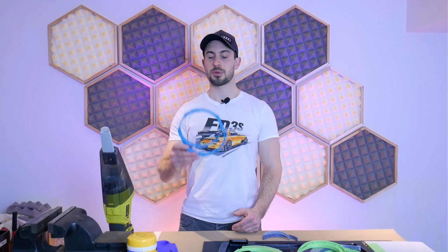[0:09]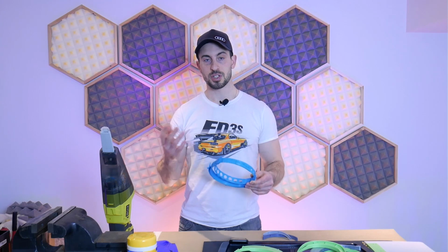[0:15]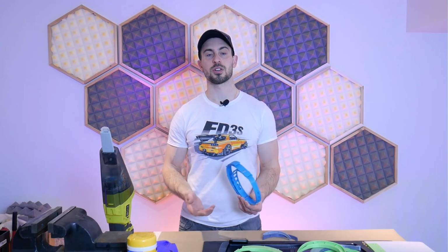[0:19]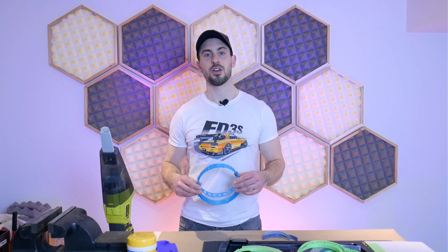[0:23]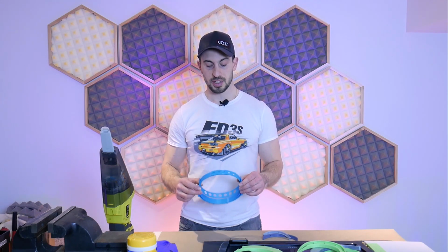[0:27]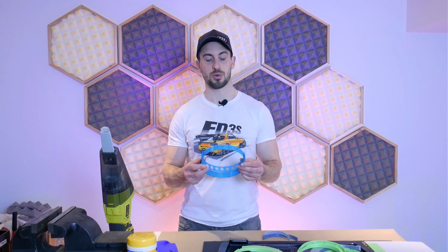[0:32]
Hey guys, so this is just a follow-up video to my last video where I shared with you guys my 3D printed face shield design, and it had integrating folding head straps. And I actually reached out to a number of companies since then that have been printing PPE for frontline workers like nurses and doctors. And one company thought that this would be a great candidate for the COVID isolation unit at Vancouver General Hospital. Now, it's my understanding that they trialed it there and it received positive feedback from some of the nurses and or doctors.
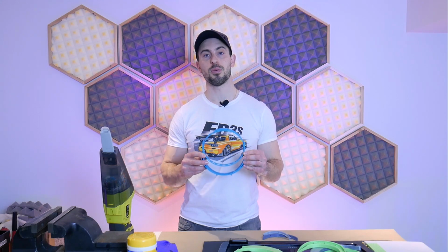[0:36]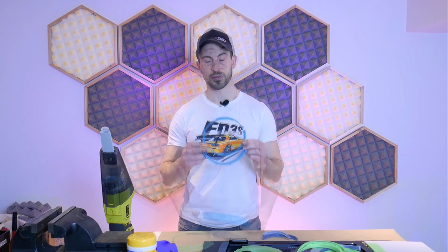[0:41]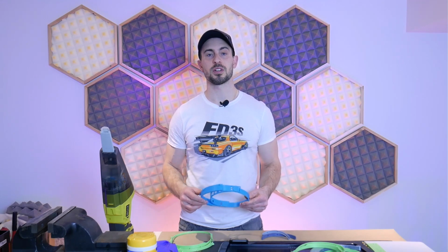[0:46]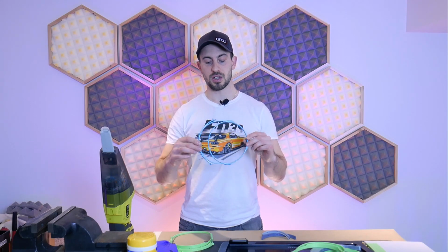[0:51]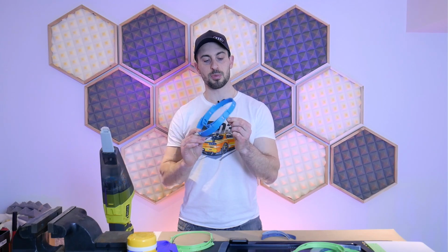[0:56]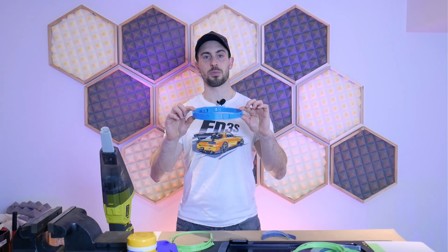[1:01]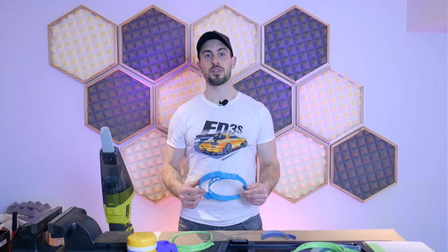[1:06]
And that's because it was an all plastic design and it didn't require any foam or any of the fabric that houses the typical elastics that you see on a lot of these prints. Also, since then, I've been printing my own design to donate, but I'm very limited with a single printer, and this thing does take a considerable amount of time to print. And that's because it was based off of the original Prusa RC2 design, and in order to accommodate the folding head strap with that little detent mechanism, I had to increase the height of the model, which contributes to more print time. So since then, I've been redesigning this mask, and I came up with something that I think works really well, and it achieves three major things.
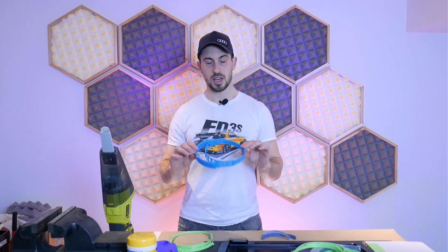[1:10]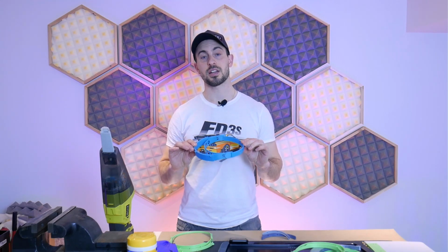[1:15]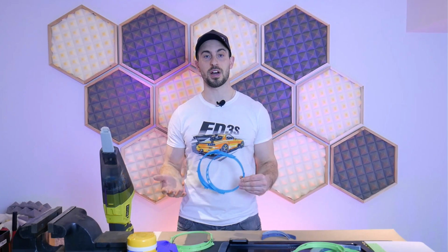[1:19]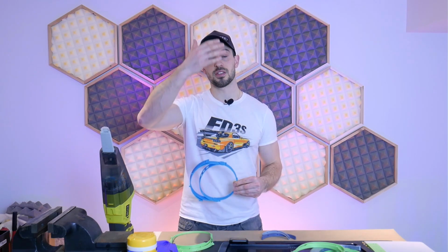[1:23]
So the first one is it continues not to use any sort of elastic or foam in the design. The second thing is that it, of course, decreases the print time dramatically, so I can print more of them and faster. It's much more efficient. Then the third thing is that it allows you to adjust the angle of the front face shield.
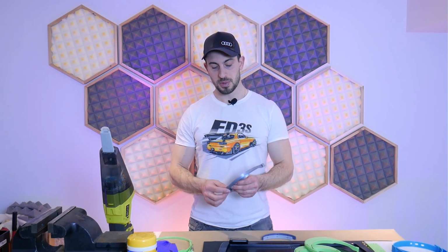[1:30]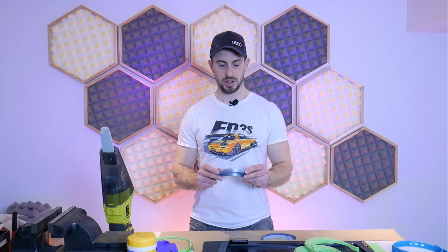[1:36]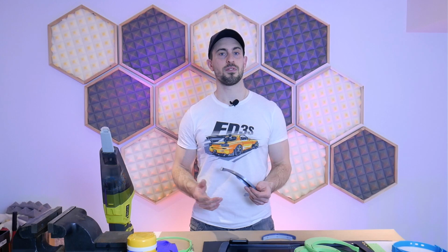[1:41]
So I went about experimenting with different models that I found online. Some of them had very clever friction fits for the face shield, like this one here. And it worked great in theory, but in practice, they were very unreliable and it was very difficult to get the actual shield in there. Other ones had very simple frames with very fast print times. But then once you got the actual shield on there, the frame distorted the shield into a sort of weird shape and even distorted your vision a little bit. And so I tried to take the best features from all of these different masks and I tried to work them into one model to sort of optimize the design.
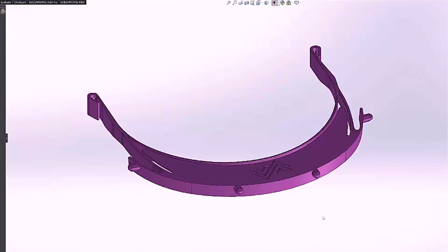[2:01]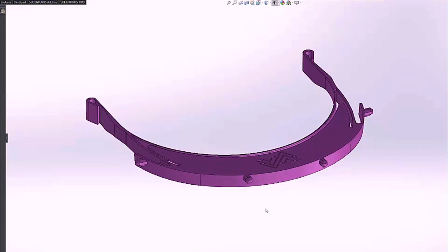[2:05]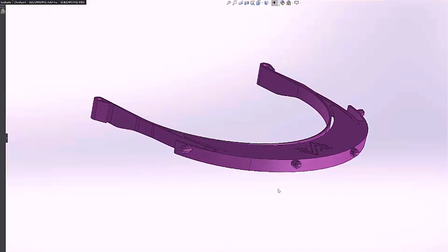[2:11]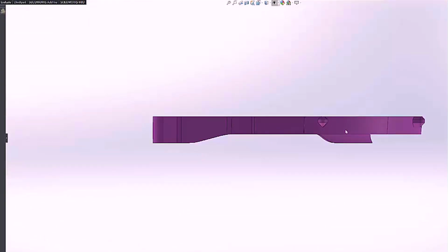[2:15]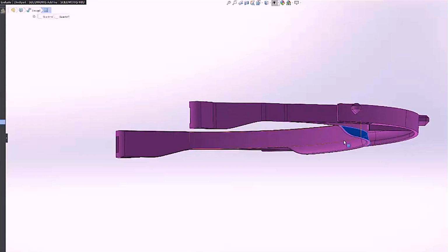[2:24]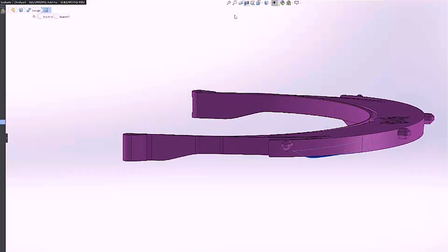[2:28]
So now we're looking at the CAD model, and the first thing you're gonna notice on the front are the little mounting nubs for the plastic face shield. And those are the same as the Prusa RC2, so it's compatible with that design as well as my previous design. From the side, you'll see that the profile is much slimmer, and so that's gonna contribute to a much decreased print time. And now I'm going to point out here this little sloping, angled, swept feature if you want to call it that, and this is where the shield sits on your forehead.
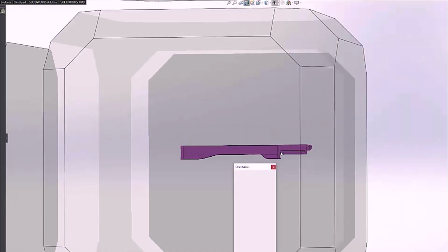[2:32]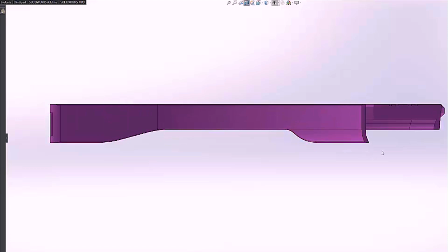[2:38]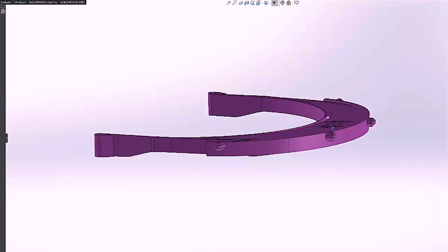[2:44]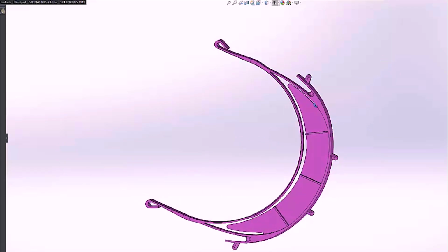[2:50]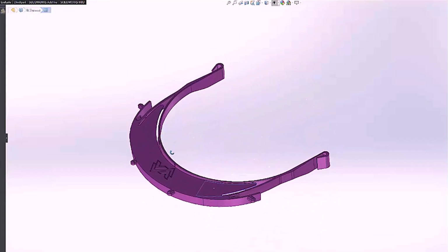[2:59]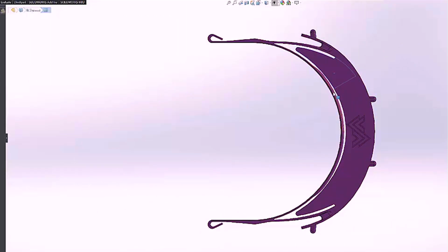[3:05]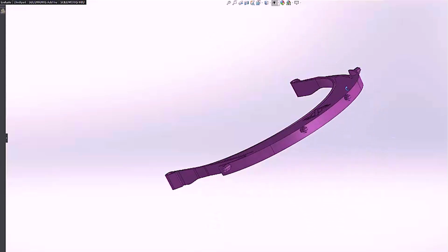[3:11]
And so you can see that this is the position that you would wear it in here, and that feature there contributes to a higher degree of comfort on your actual bare skin because you are not wanting to use any sort of foam in this particular design, because the foam can trap things like bacteria, viruses, and all that sort of thing. On the underside here, you'll see that I'm pointing out the cover for the top of the forehead. And so I think that's an improvement over a few designs out there where this area is all open. And the other thing you're gonna notice is that although there's a cover, there's still a tiny little slit here. And this is key for comfort and for fit, as that's gonna allow the shield to bend and conform to your head a little bit better.
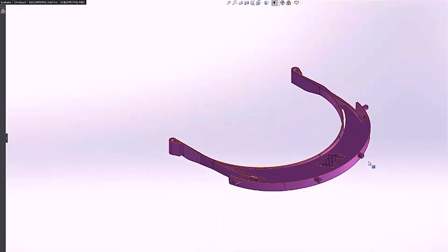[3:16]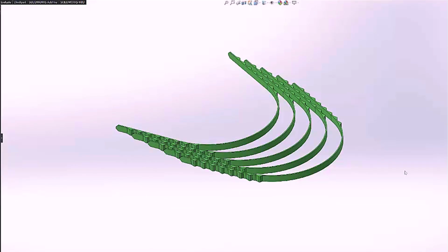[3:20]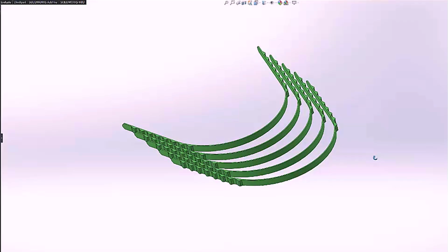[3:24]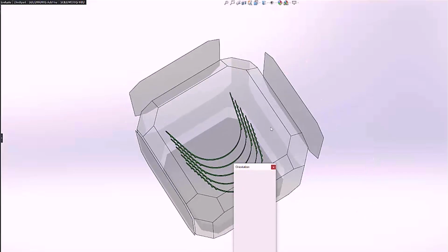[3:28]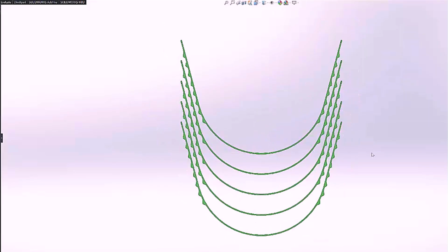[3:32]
Now we're quickly gonna look at the straps that go behind your head, and these are the PLA straps. So you can see that the model is nestable. I have five different straps here to optimize the print space on a printer bed, and they have to be printed in a geometry that's close to what would be in service, because PLA is flexible, but it's not as flexible as, say, TPU, so it has to take on that general shape of being in service. If you flex it too much, it could break.
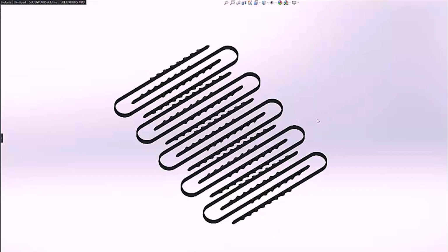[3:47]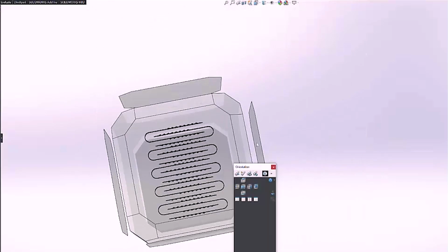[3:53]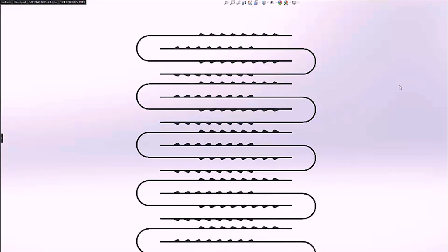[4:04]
Unlike the TPU, which you see here, I can fit twice as many on my print bed because I can really squish the model down into a smaller shape, because it won't matter. Once it comes off the print bed, the TPU is very flexible. It's also still very strong. I can flex it into any position, any sort of shape I want it to conform to, pull on it, and it won't break. So the TPU is ideal, but you can get away with the PLA models.
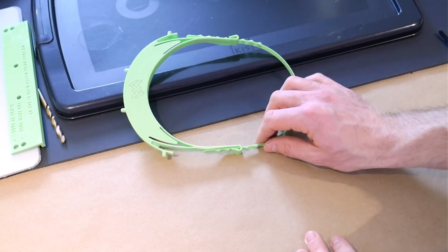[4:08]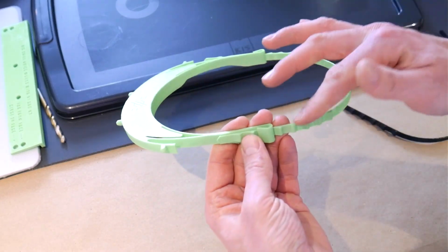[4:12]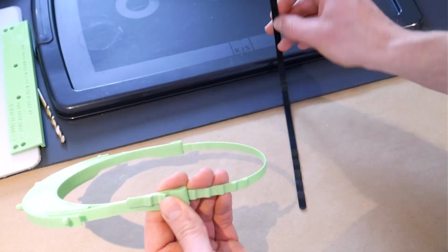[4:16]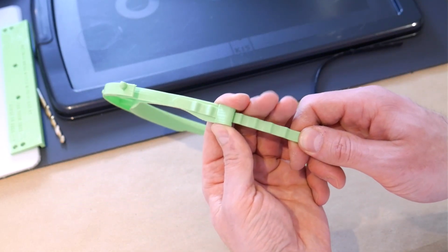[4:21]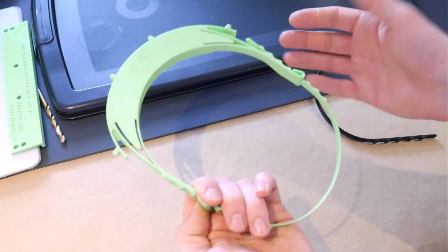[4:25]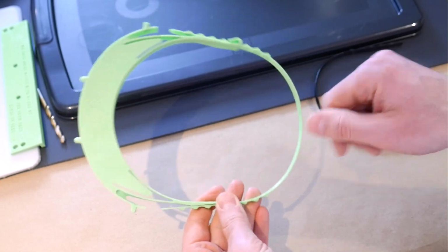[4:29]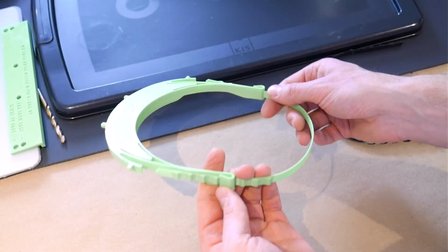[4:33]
And so this is the actual printed model here, and all of the same features from the CAD model are there, but I want to focus on these back straps. These ones here are printed in PLA. I do have a TPU model that I printed here. You can see it's much more flexible. What I want to demonstrate with the PLA model is to show you that it does work in PLA. And so in order to tighten this thing, it works a lot like a zip tie. You can sort of just push it in and it makes this area smaller. There's adjustment on both sides, so you have more adjustability.
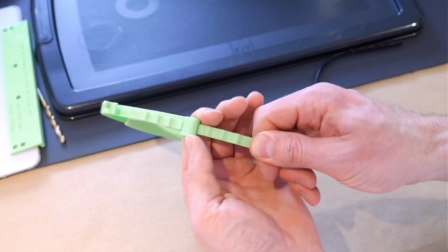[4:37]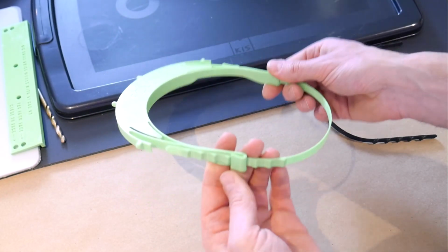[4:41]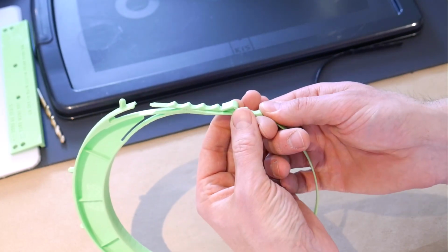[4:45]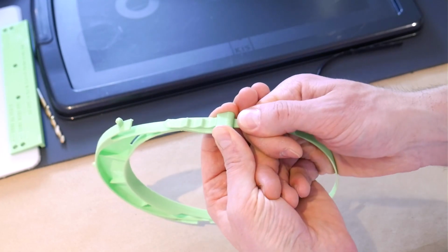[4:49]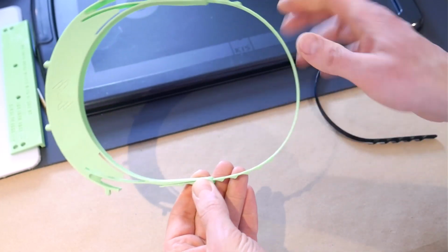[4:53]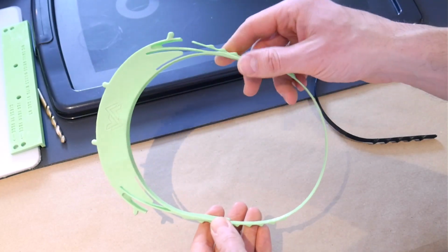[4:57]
Now to make this thing looser, pulling out is more difficult, and that is by design because you don't want this thing to loosen while it's around your head, but it's pretty easy. You can either brute force it if you really, really want, or you can take your thumb and forefinger and squeeze around this loop and then just pull it. And that sort of loosens it up just enough to get these notches to pull out, and then you have a larger area here for a larger head.
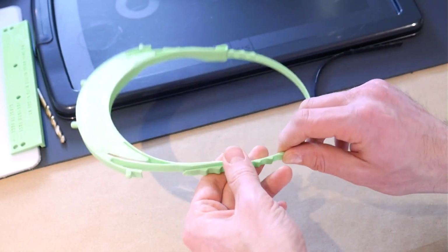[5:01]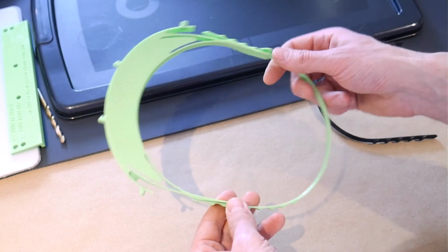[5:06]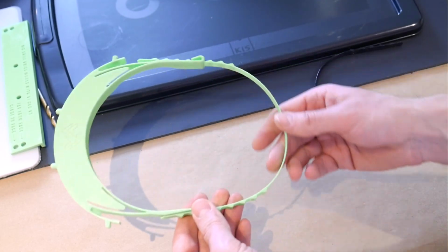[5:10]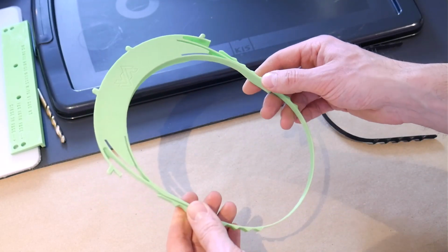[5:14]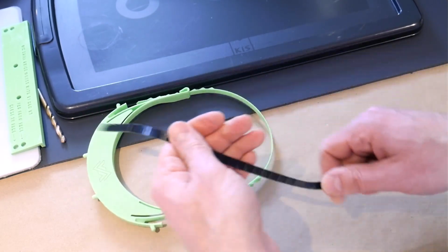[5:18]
Now, the PLA will eventually fail if you continually adjust this thing over and over again. If you leave it at one setting, it will likely last indefinitely, but I would say if you adjust it over and over and over, you're probably going to get maybe 20 or 30 uses out of it before the PLA fatigues. TPU, on the other hand, is what I would definitely recommend.
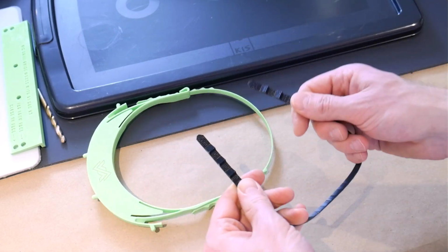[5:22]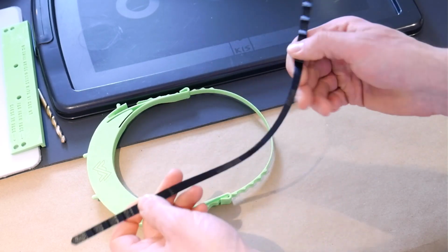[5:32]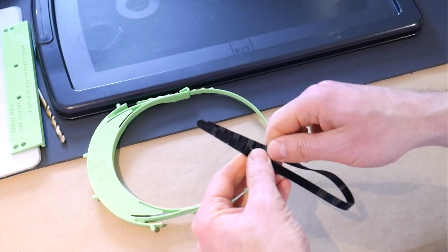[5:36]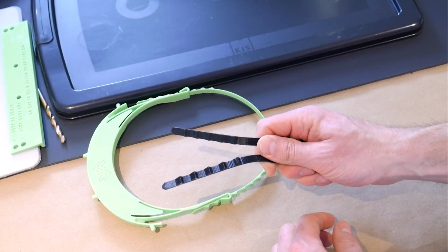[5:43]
This is the first time I'm printing with TPU, and don't be scared of it. It's actually really easy to print with. I can share my print settings if you ask me for them in the comment section down below. But this stuff is so resilient, so durable. You can pull and pull and pull and flex it, and it will not break and it will not fail. It's so good and so easy to use. Definitely try this out if you haven't already.
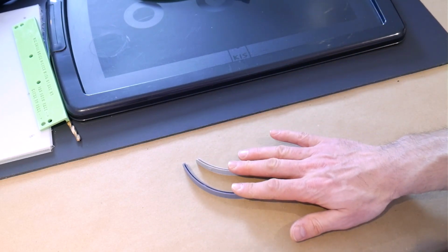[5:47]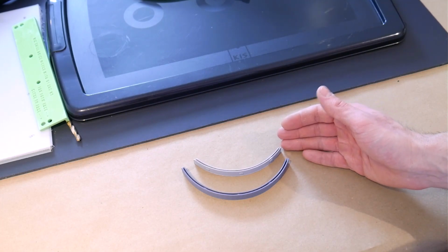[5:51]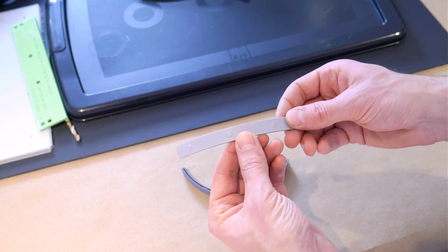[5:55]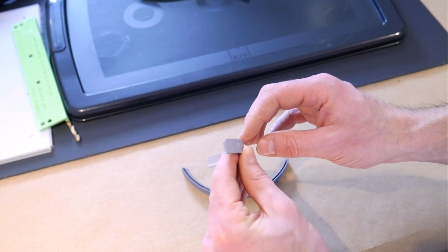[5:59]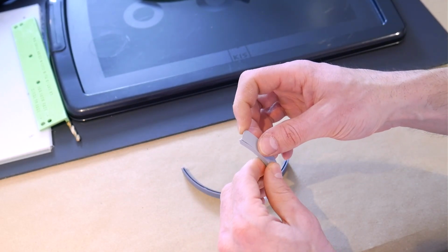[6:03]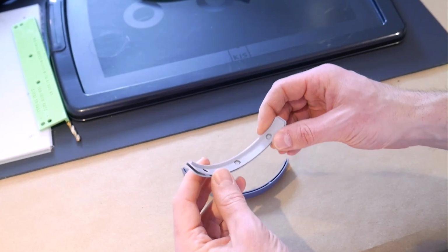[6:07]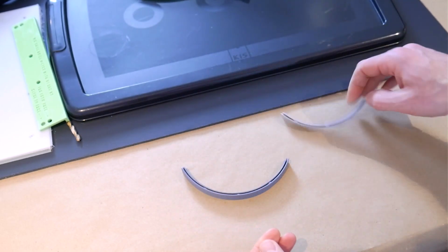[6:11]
In addition to redesigning the entire mask, I also redesigned the little lower face shield part that fits on the bottom of the clear sheet of plastic, in order to give it a little bit more shape at the bottom. This is an original Prusa RC2 one, and you can see that they made the walls really, really thin, and it's very flimsy. After a couple of times of installing and removing those shields, they tend to separate. Now, this of course is not great because then it renders this thing useless and the shield will pop out.
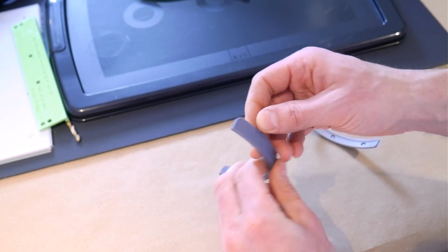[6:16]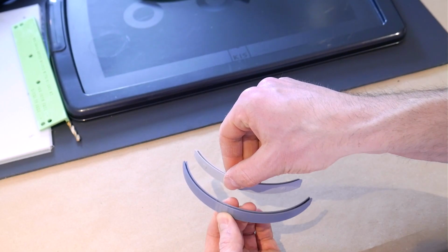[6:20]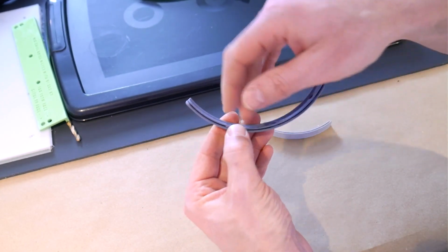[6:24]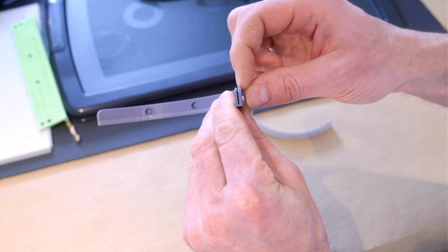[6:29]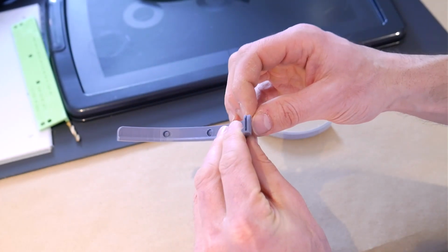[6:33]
I made mine a little bit beefier here, and I decided to also increase the swept area so it gives the shield a little bit more shape than this smaller Prusa RC2 one. This guy here also has a lead-in, which might be a little bit difficult to see on the camera, but it makes it easier to actually slip the shields in there. The spacing is a little different as well.
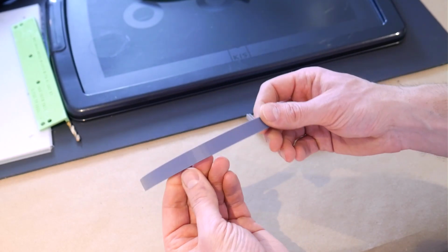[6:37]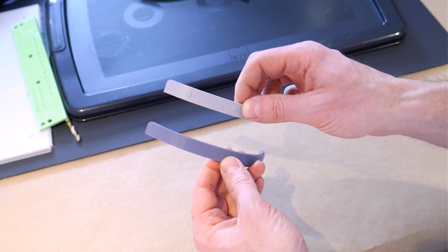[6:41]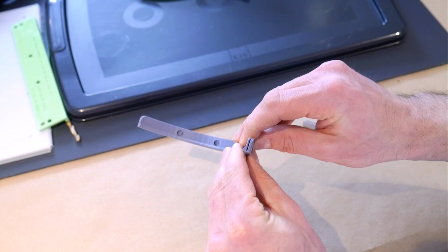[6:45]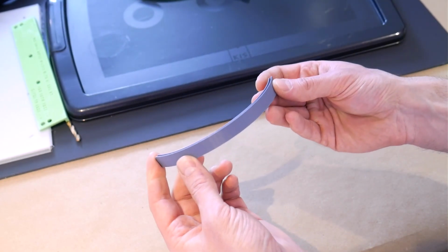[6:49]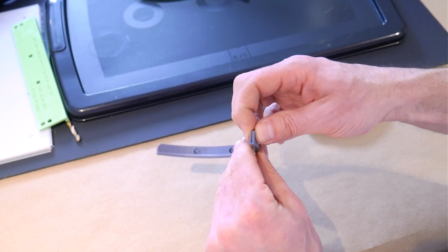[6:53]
I'm using 0.5 millimeter PETG sheets. I don't remember, at least off the top of my head, what the Prusa design was using. But for these 0.5 millimeter sheets, this works excellent. It's easy to get the sheet in, it's easy to get it out, but it still provides enough friction that it holds the shield in place, and the added thickness doesn't cause those layers to separate.
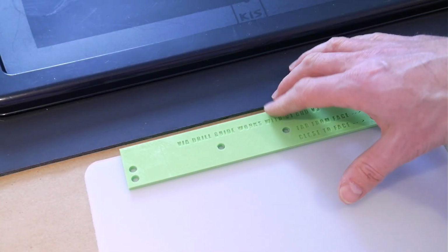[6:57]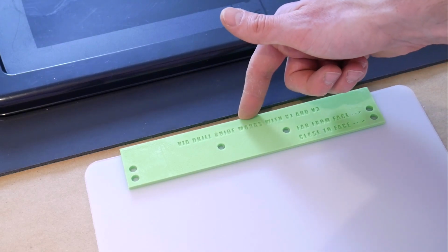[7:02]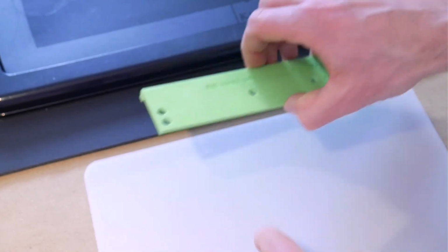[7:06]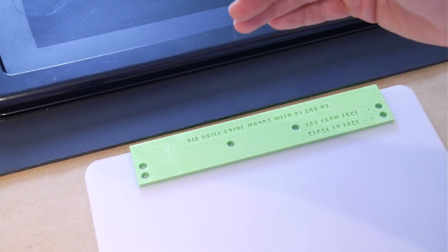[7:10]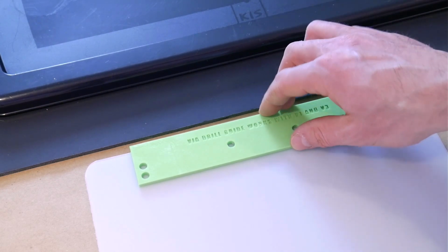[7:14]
One of the other things I designed for you guys to make this whole process a little bit easier is a drilling guide for the holes in the plastic face shields. You can see here, it's got a bit of an L shape to it, and that's a reference edge for the top of your plastic face shields. You can stack up to 10 of the 0.5 millimeter thick face shields and drill through 10 at once. The center two holes are mandatory.
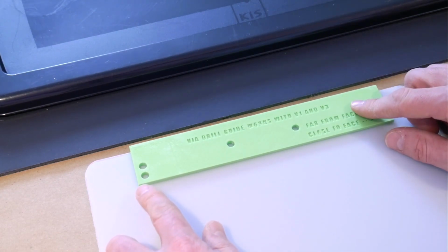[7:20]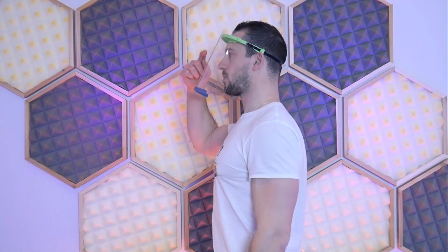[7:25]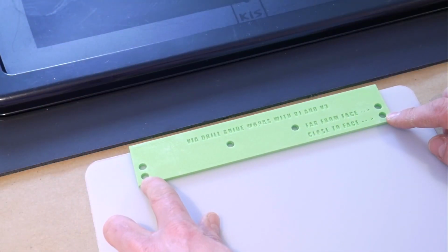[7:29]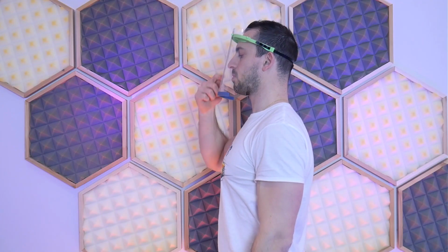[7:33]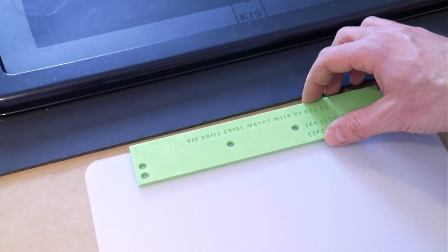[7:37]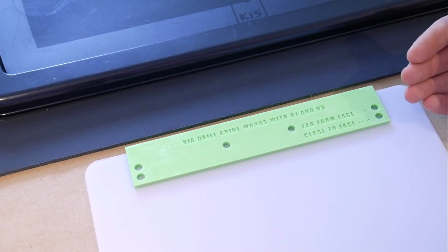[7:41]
For the outer two holes, you can choose to drill the ones off the top here, which are in line with these two, and that will fit your face shield farther from your face. Or you can choose to drill the offset holes down here, and that'll fit the shield closer to your face. You can, I guess, also drill both if you want, but I don't think it's ideal to have more holes in your face shield, as the whole idea is that you get optimal coverage.
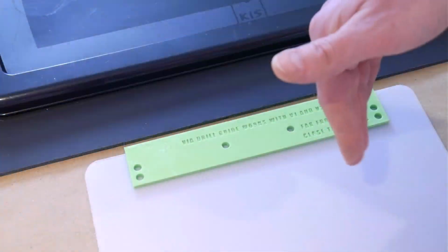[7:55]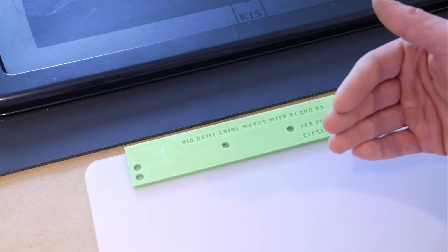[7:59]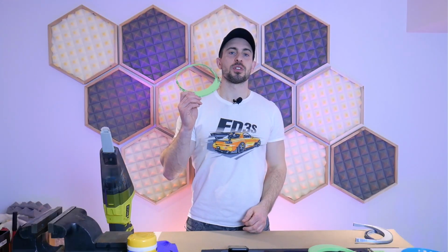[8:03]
Now, this guide here is compatible with the new version. It's also compatible with my previous version if you're still printing those. By drilling those offset holes for the previous version, you can also use that to adjust the angle of the face shield, and not just use the back of the headband, if you find it a little bit uncomfortable to angle the headband. So that pretty much covers the new design, guys, and I hope you put it to good use.
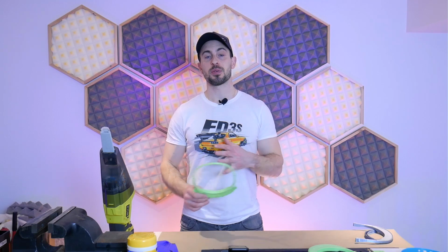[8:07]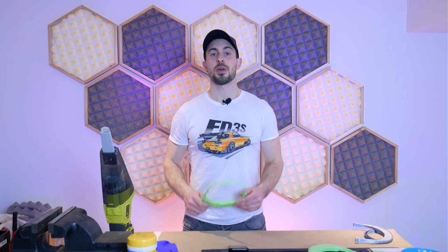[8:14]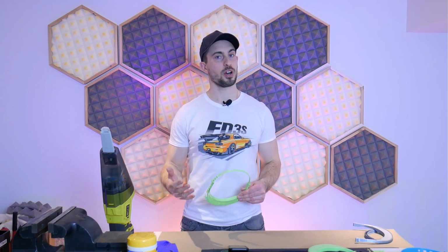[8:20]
I know I am. I have my printer going as often as I possibly can in order to provide PPE for anyone who needs it or requests it from me. Now, you may also want to look into donating this PPE to your local nursing home or old age home, as they're being hit pretty hard right now and they're not as well equipped as a hospital would be.